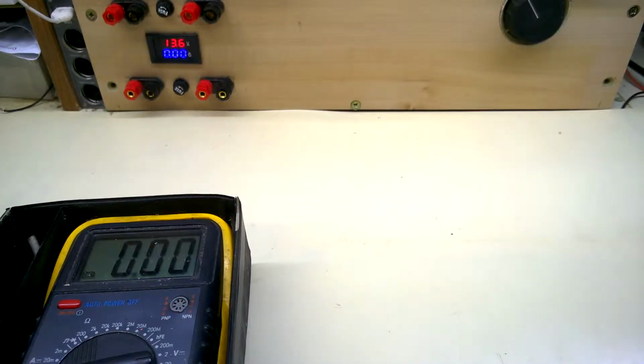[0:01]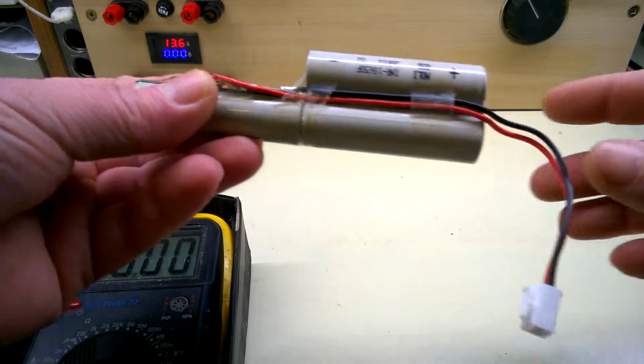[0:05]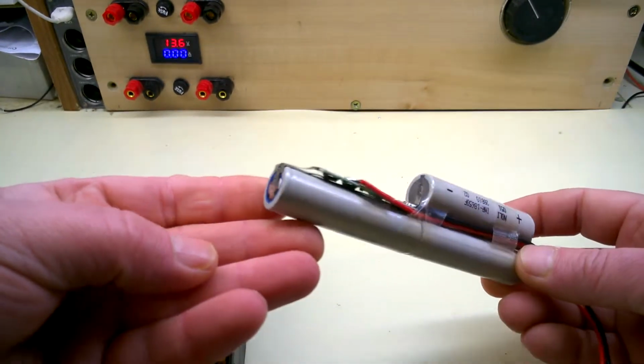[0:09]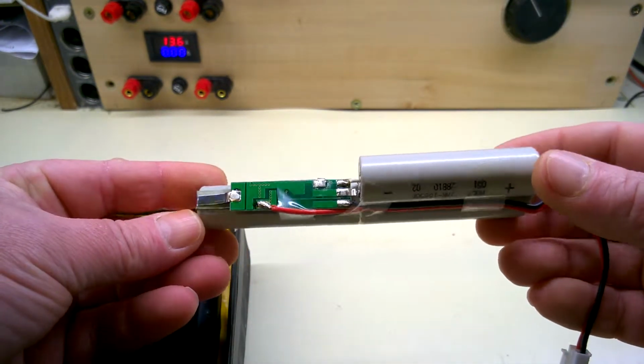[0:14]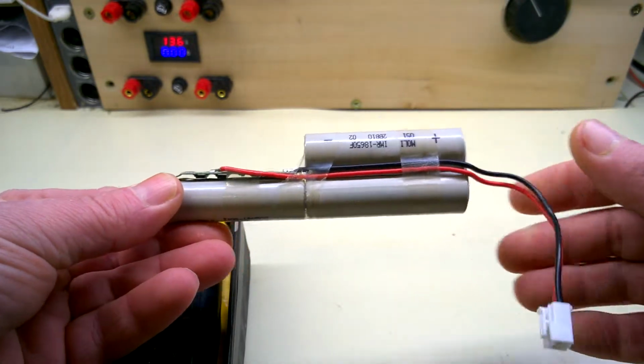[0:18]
Today I've got another bath lifter remote battery, I believe it is. I've been sent in to see if we can replace it. Apparently not available, as most of these things aren't anymore. It's just the whole remote available at about extortionate prices.
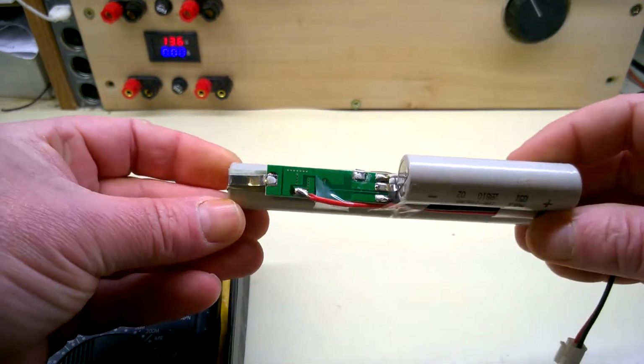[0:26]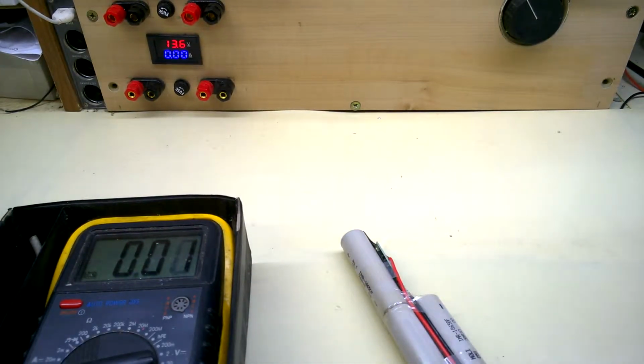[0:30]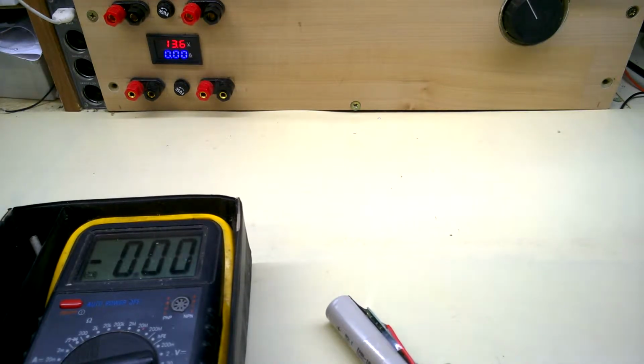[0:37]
So I've tested the voltage on this one. It comes up to about 11.5 volts. Try and measure that. What did you get? Oh, it's gone up to 12. Strange. 11.5 a couple of seconds ago. Okay, so it's still got some life in it, but apparently it's got issues.
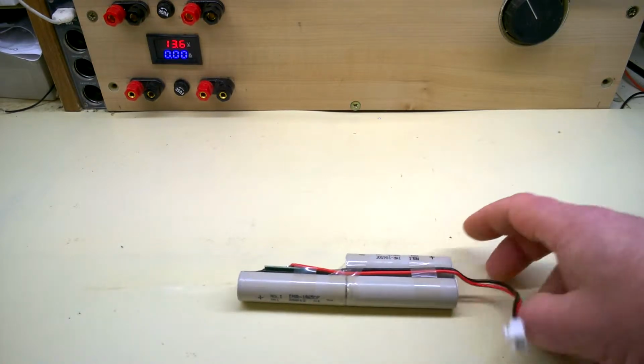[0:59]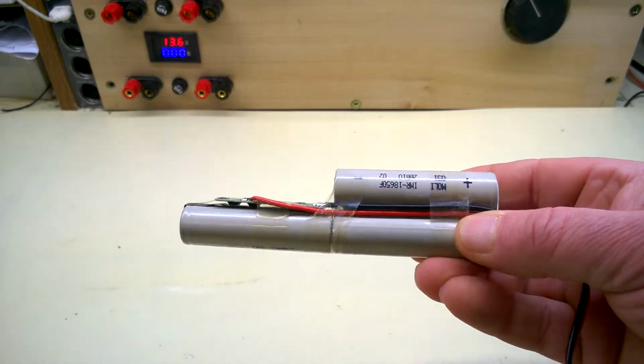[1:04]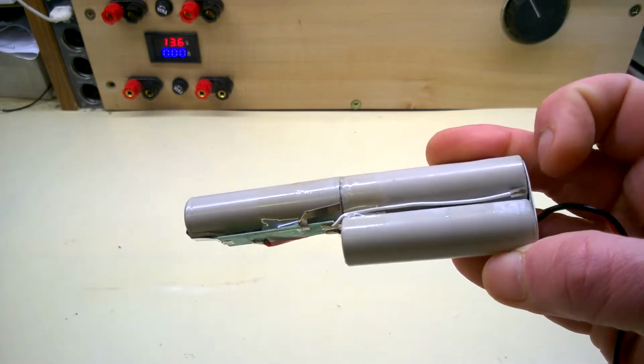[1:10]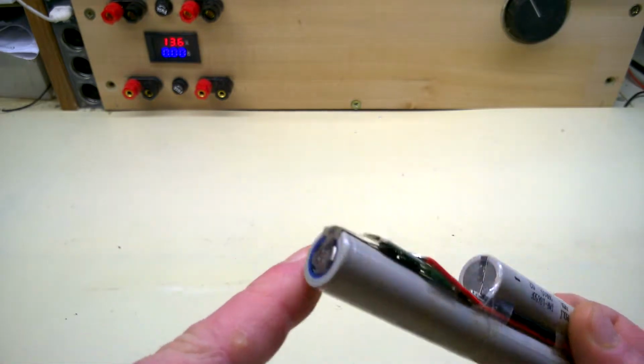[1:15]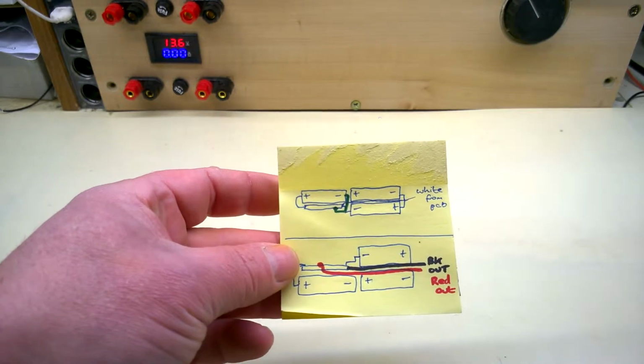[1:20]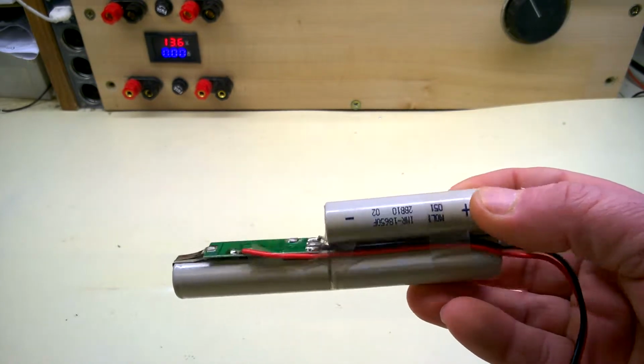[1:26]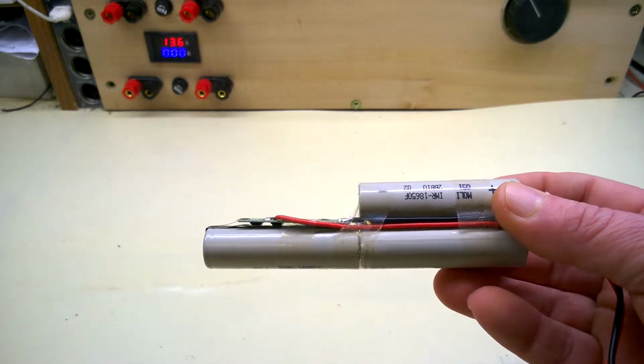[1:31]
I'll get that out of the way. I've already taken a couple of pictures of these, so I know how to put these things back together. A couple of black wires, connections going to every part, white wire to there. It's got a little strip going to there, connector on the end. So first order is make up a new pack.
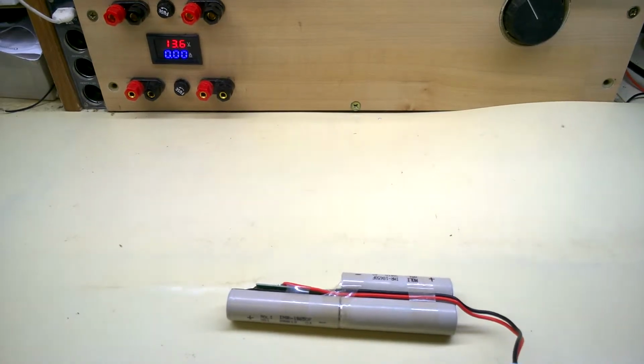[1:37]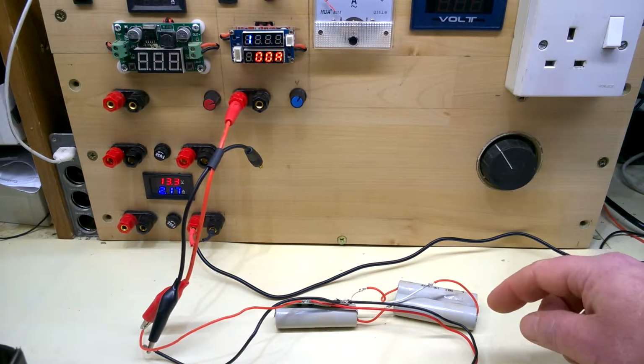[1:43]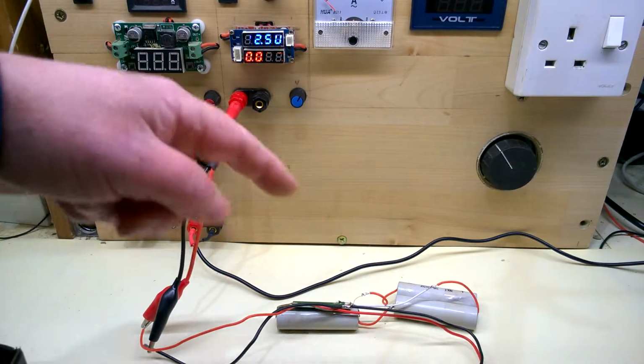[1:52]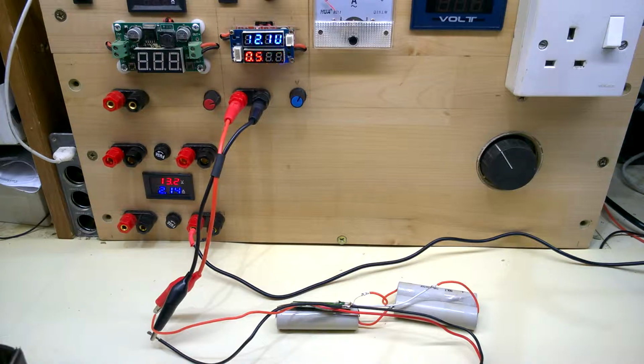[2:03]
Just a quick afterthought there, really. Having taken the thing apart, of course, I just wonder if that charging board was actually working on the original setup. So I've put it back together, jerry-rigged it with a few wires, and stuck it into a power supply, giving it 12.5, 12.6 volts, which is what you should have. It takes about half an amp there. I don't know what kind of power supply plugs in to recharge it, so I assume 12.6 volts for a 3 cell pack. And just check the voltages on these.
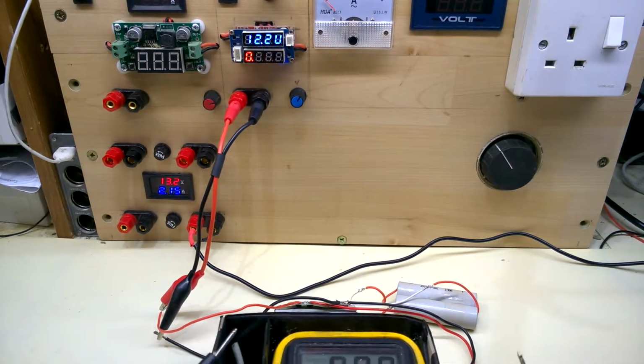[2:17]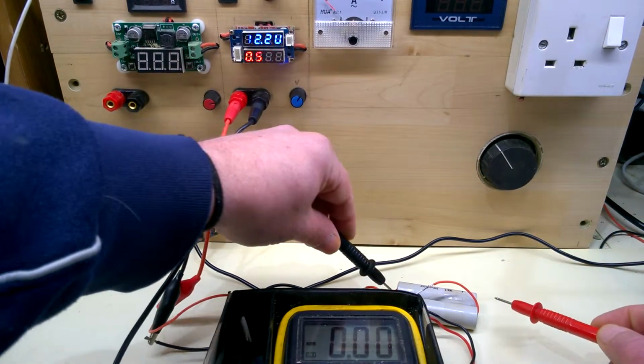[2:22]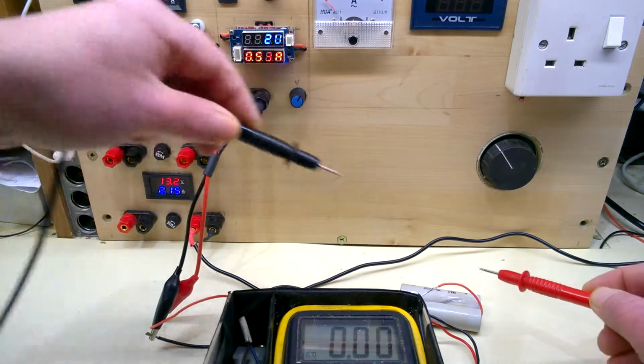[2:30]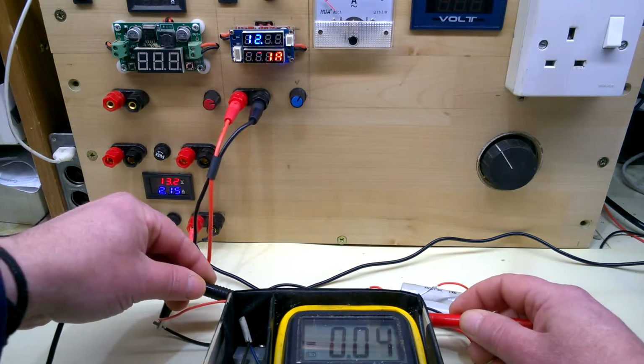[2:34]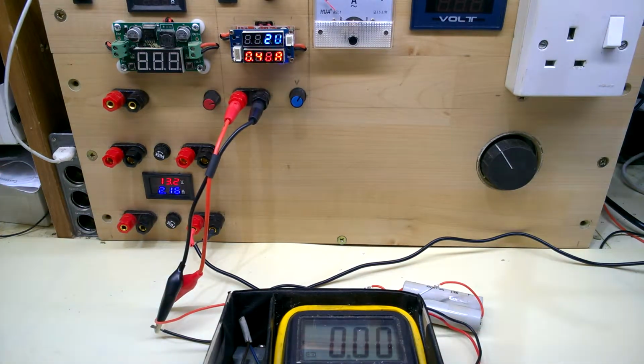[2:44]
Can I get that in there? Just about. Check that one. 4.02 now. 4.13. So the last time I did this, I checked it, it was on about 4.3 volts per cell, so it was a little bit high. I'm just going to leave that for a couple of minutes and see what happens. So I know at least the charging board is now working, but I'm just hoping it's not going to give that 4.3 volts per cell, which is not good.
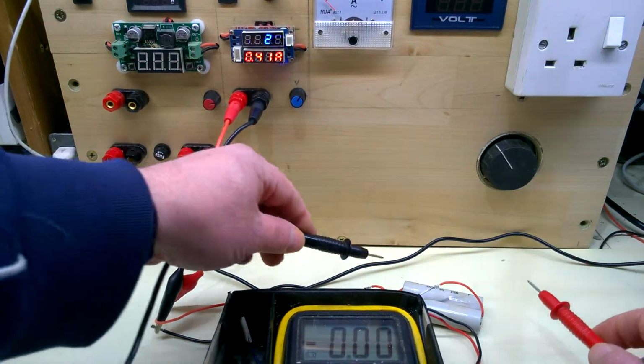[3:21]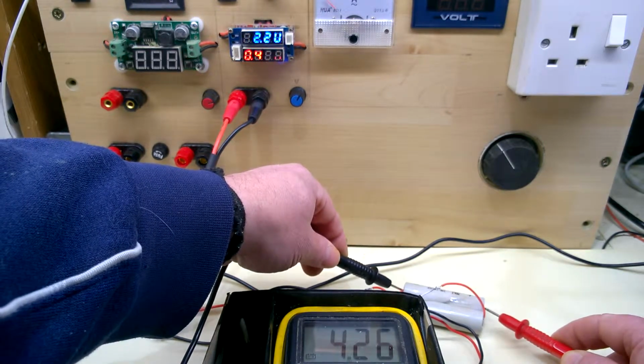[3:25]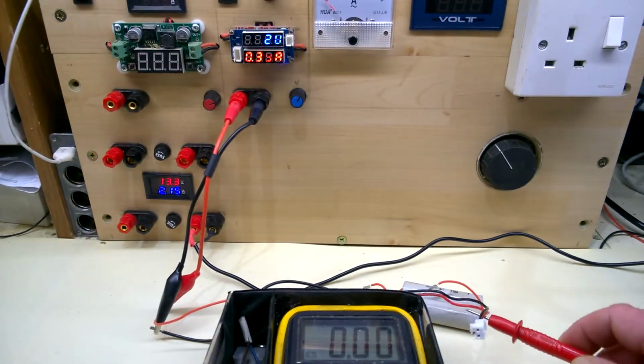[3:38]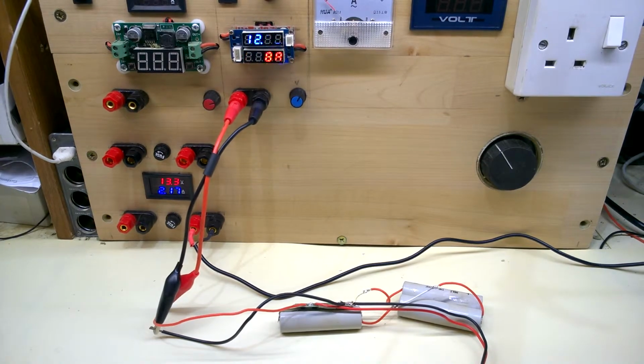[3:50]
I don't know if you can see this through the camera, this is all flashing all over the place. I see with my eyes about 12.2 volts, 0.4 amp. So, board's working, but it was giving it slightly too much. I see 4.26, that's going up. That's too much really for a lithium cell. But as I say, I don't know what goes in there. Maybe just a 12 volt supply, I don't know. But it is what it is. We'll just replace that. Let's make a new pack out of that.
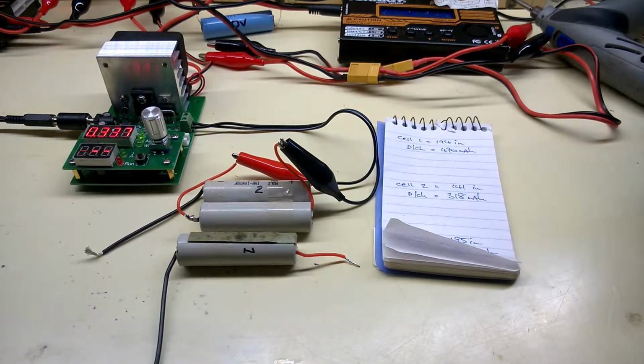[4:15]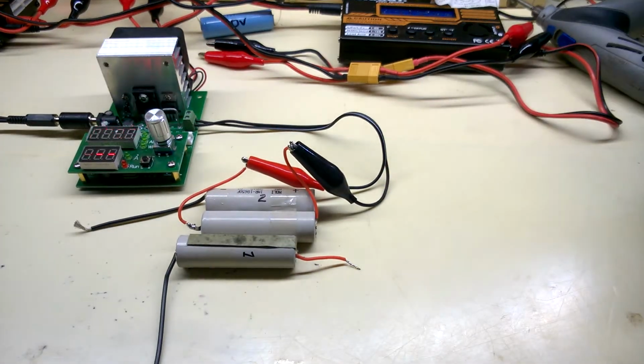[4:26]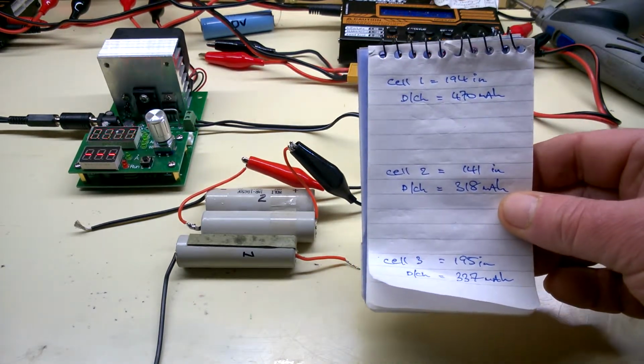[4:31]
Just another quick thought, really. Before I wire this back together, check the charging board. I was going to charge these cells up individually, see what sort of capacity, if any, they'd be giving me. So that's why I slung that back together. This is just for curiosity's sake. I charged and discharged these. A handy little test if you don't have one. About 12 quid, go and buy one.
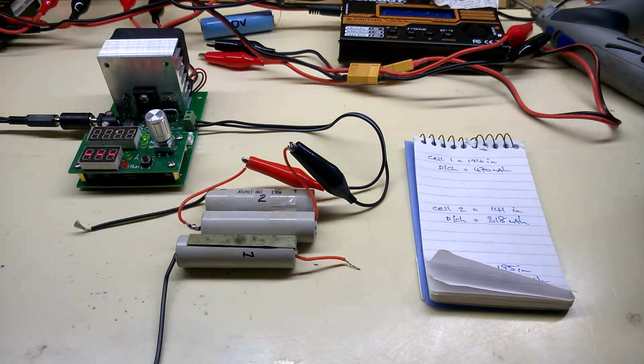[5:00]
It's a curiosity. I can't see that very well, it's a bit blurry. Hold on, I have to look over the camera. Cell 1, 470. Cell 2, 318. Cell 3, 337. It's discharging 1 amp. I was going to discharge them at lower, but it would be crap anyway, just for curiosity to see what they do. So an average of 360, 380 milliamp hours. No good. You'd expect about 2 amp hour, something like that, 2000 milliamp hours. So that's that. So next will be to make a new pack.
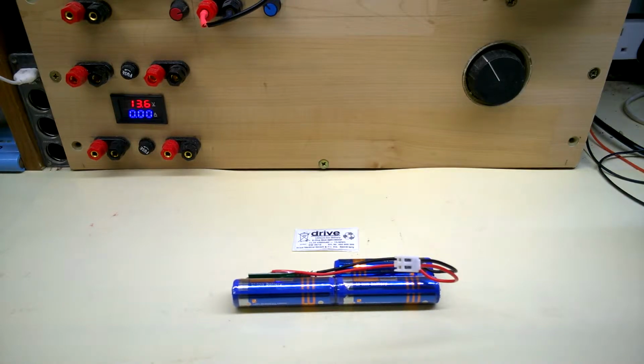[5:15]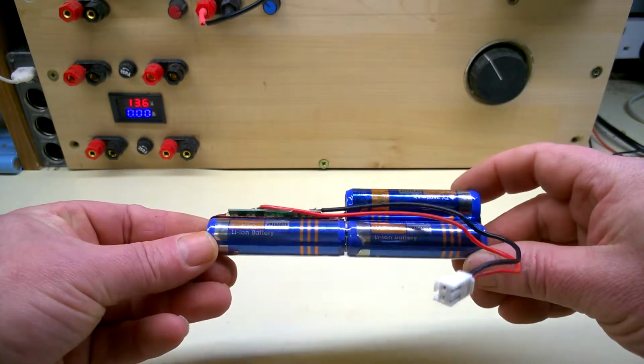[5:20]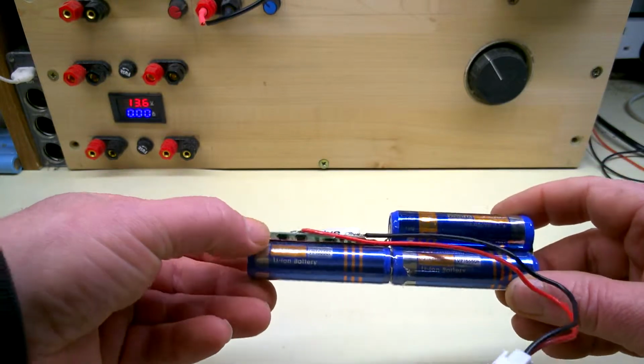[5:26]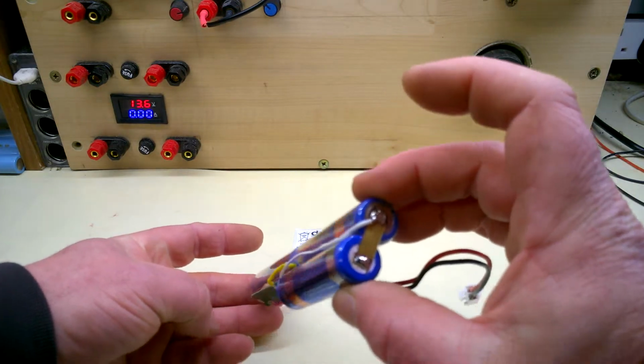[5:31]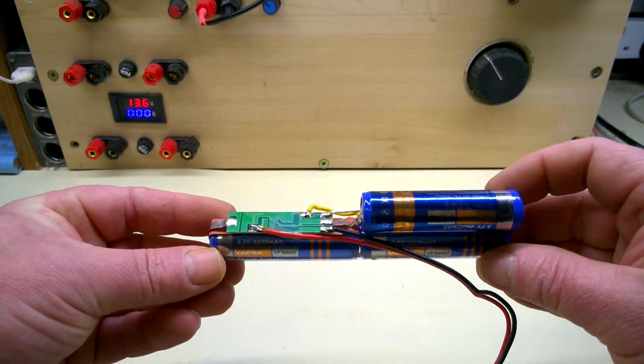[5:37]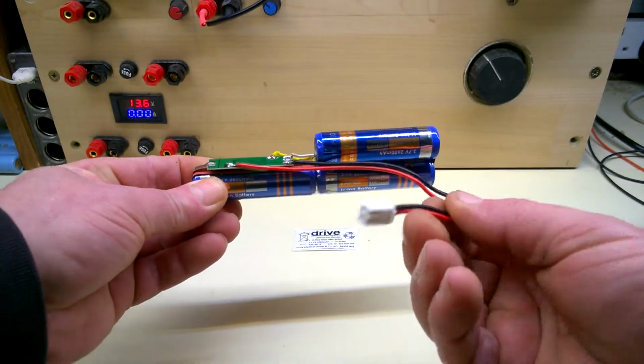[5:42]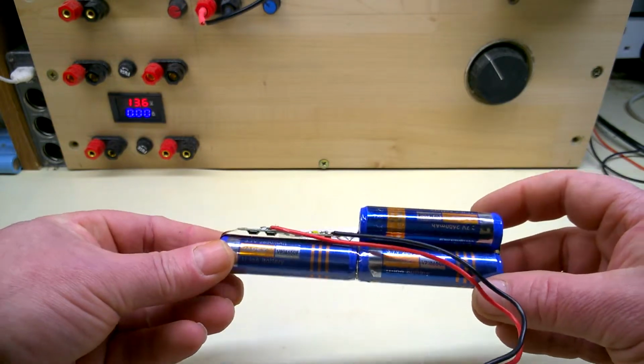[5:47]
So this is the new pack, made up from new 18650s, capacity of 2600. So put the board back on, bit of paper underneath there to insulate it. Put the wires back on. Okay, so all I need now is to apply some power across here. I don't have the correct connector for this. Apply power to the board, make sure it's charging. Then put a bit of shrink wrap on and finish putting it back together.
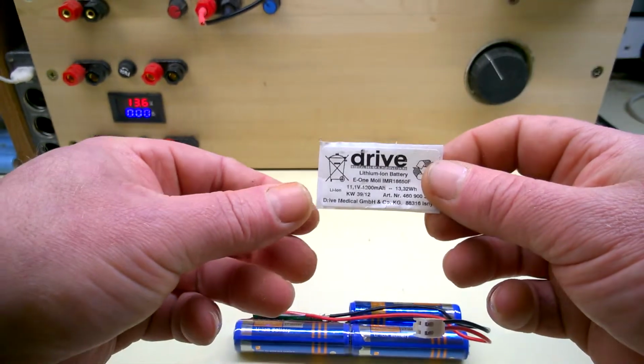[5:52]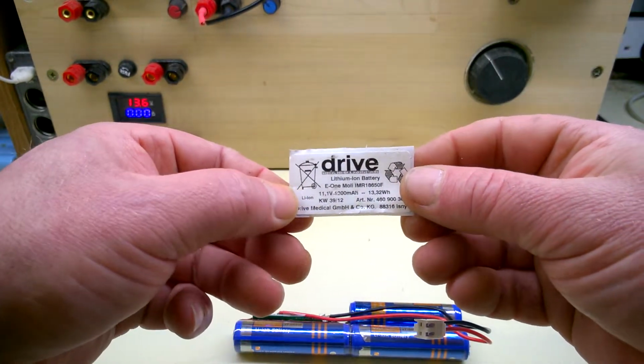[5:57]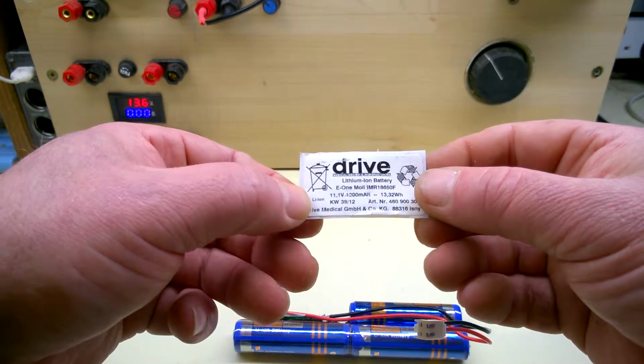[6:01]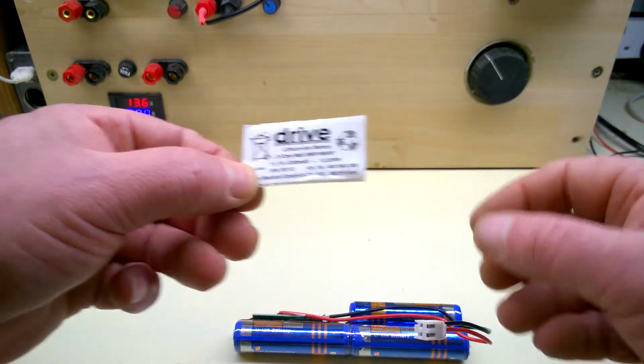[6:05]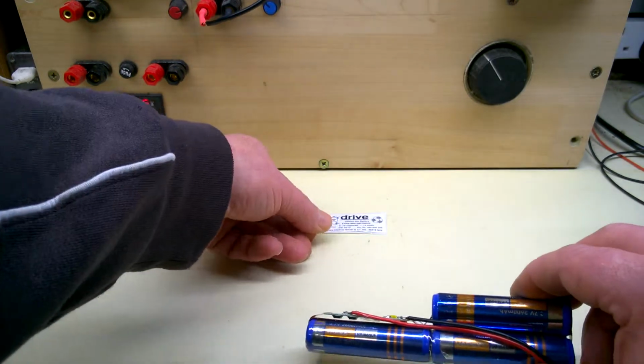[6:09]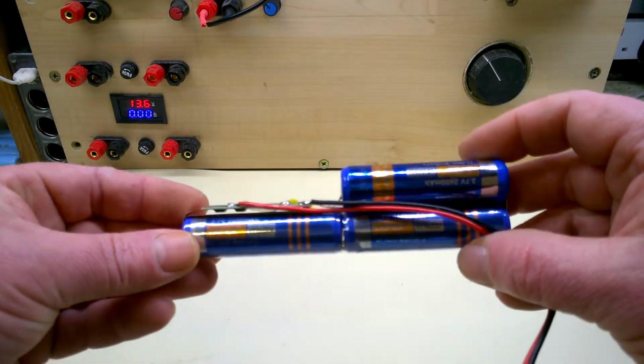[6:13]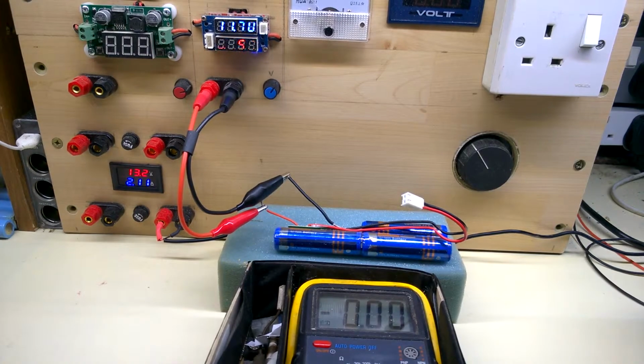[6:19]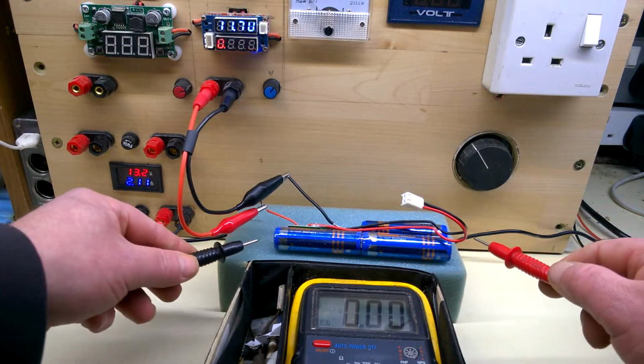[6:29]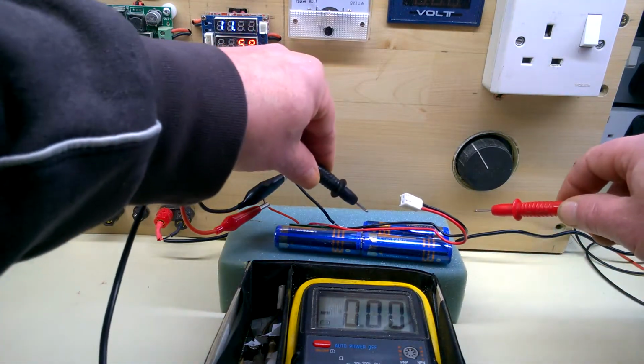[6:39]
For those who are interested, this is a Drive Medical lithium ion battery, 18650, 11.1 volts at 1200 mAh. So that's twice the capacity of the old one. The old ones only come up to something like 400. If we scroll back to the beginning of the video, I forgot what the actual numbers were. Okay, so attach some wires and supply some power to it, going up to 12 volts. I set it on 12 volts, half an amp. These cells were on 7.5 before they were charged. That's 8.2 now, 4.1 each.
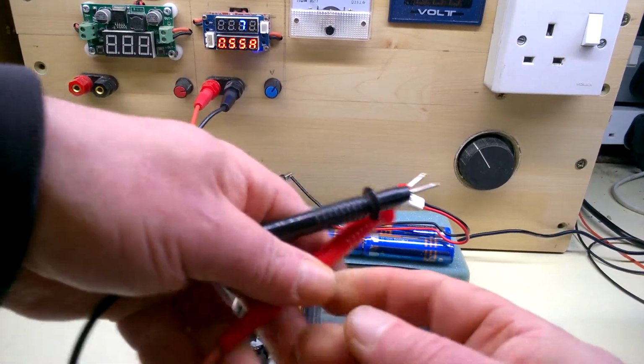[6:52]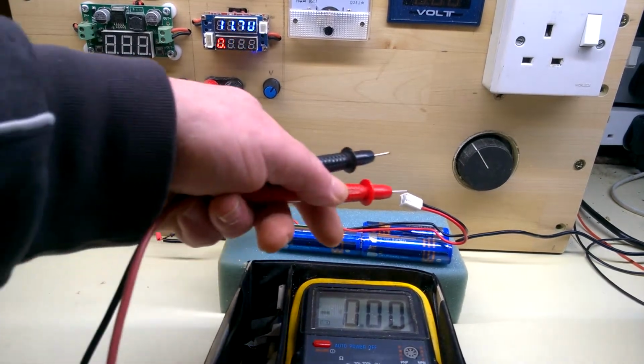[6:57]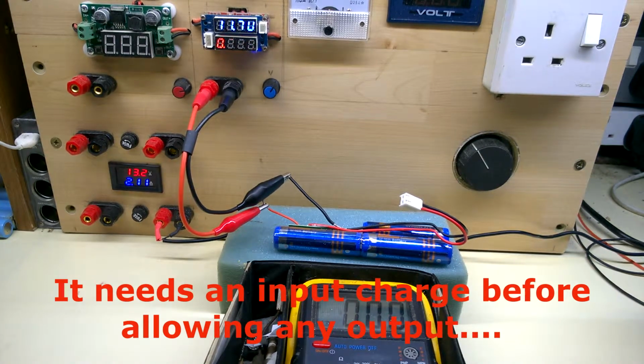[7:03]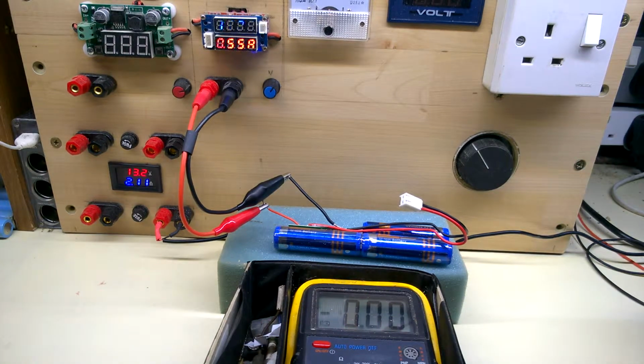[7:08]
And that one, give me a reading here. What was that? Yeah, 4.1. So it's accepting power in. I tested the output on this and there was nothing there. So I know this has got circuitry underneath there. I'm hoping it's nothing like lithium ion drill batteries, where you take the batteries out and it refuses to cooperate ever again. But we'll see how it works. I'm going to leave that on charge for a couple of minutes or so.
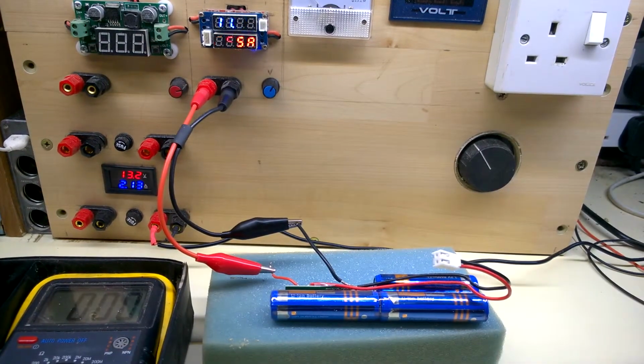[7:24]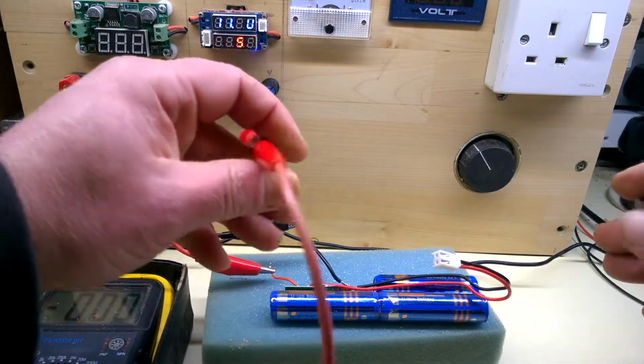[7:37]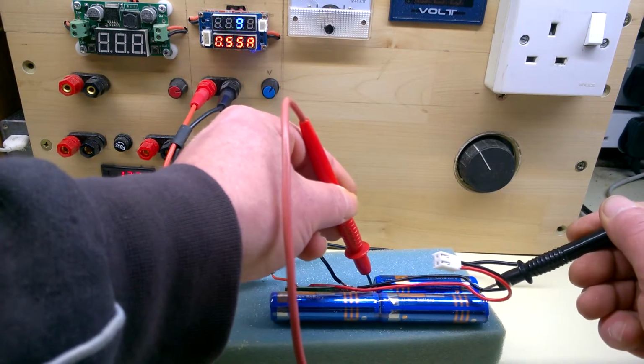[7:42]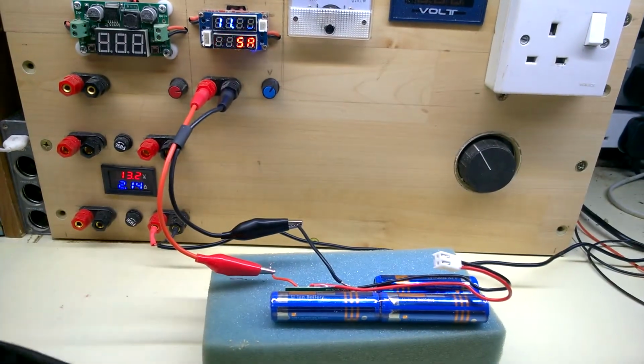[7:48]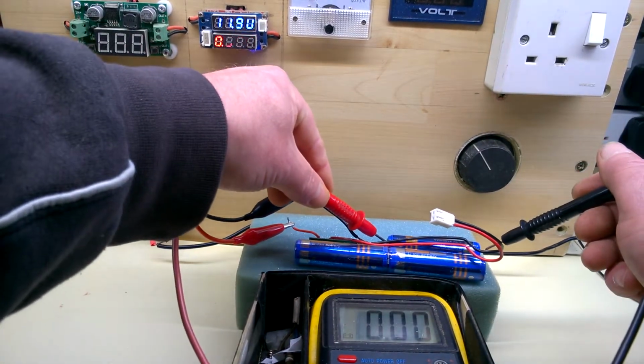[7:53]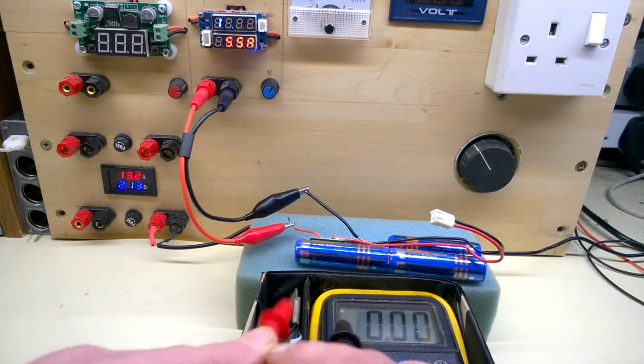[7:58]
Back to it then. Okay, so that's hooked up to the power supply. You see the meter in there, seeing what we've got. Showing 8.4 across that one. It's only 12 volt going in. So I don't know what the power supply to this is for charging. You can see that that says 4.2. Let's put that in there. That might be easier to see. I know I've got these connected in reverse, but 4.2. Okay, so we know it charges.
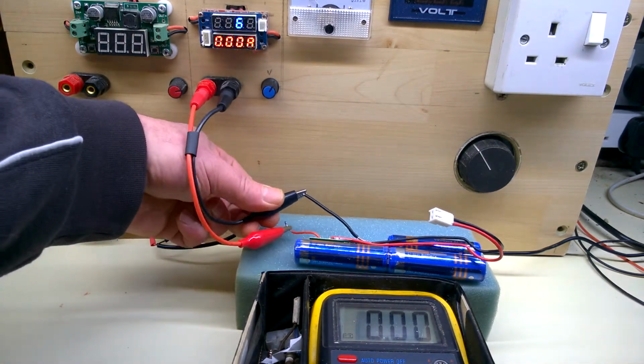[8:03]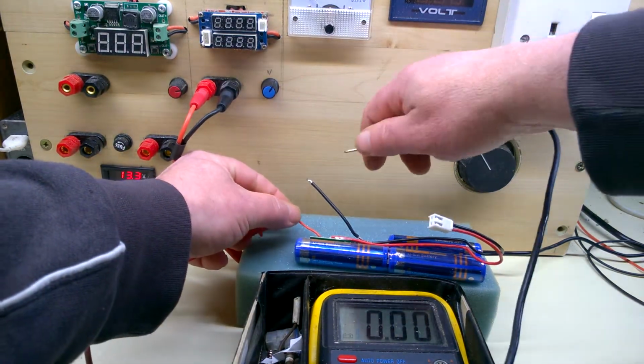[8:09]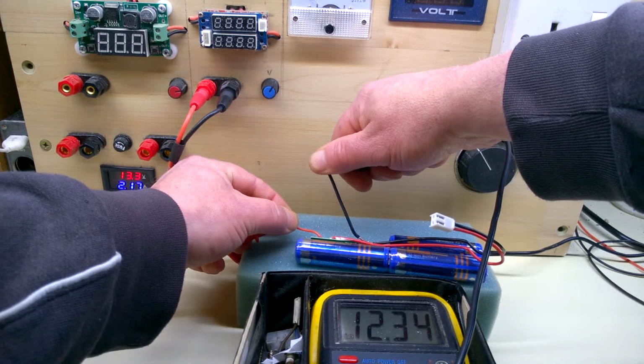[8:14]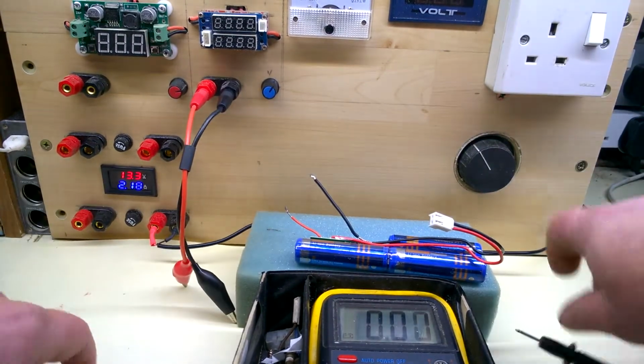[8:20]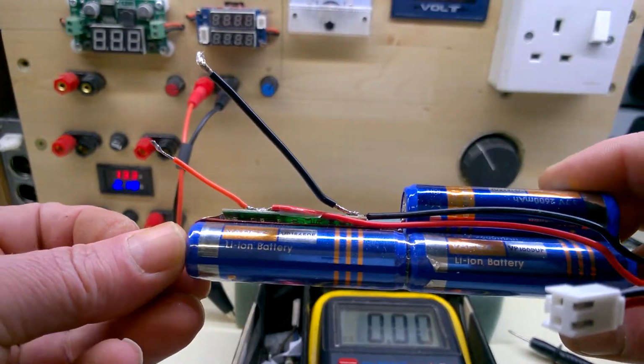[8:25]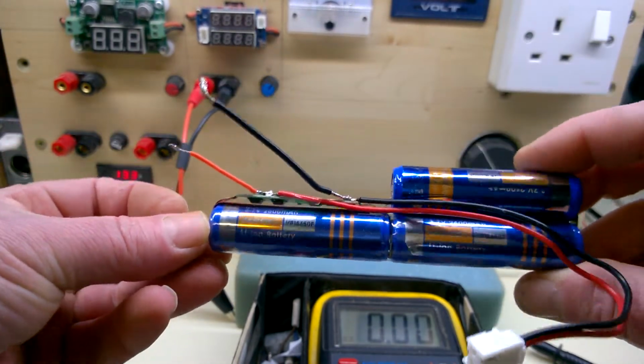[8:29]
Let's switch that off and see if we've got any output on these. If there's no output, then I can't use this board. Ah, here we go. 12.34. Oh, great. I wasn't getting anything earlier on before charging. As I say, there's some smart circuitry in there. It's underneath that board. I don't know if you can see it. A few chips in there. Okay, well, there's nothing more I can do with that.
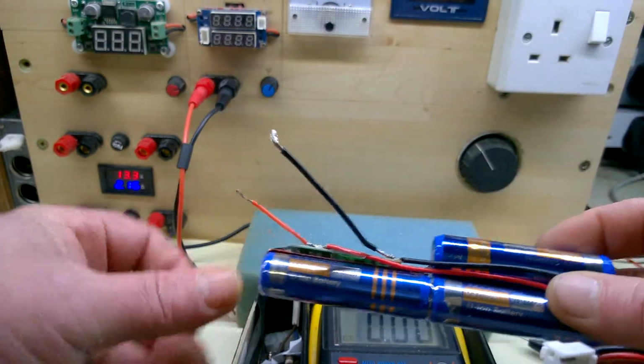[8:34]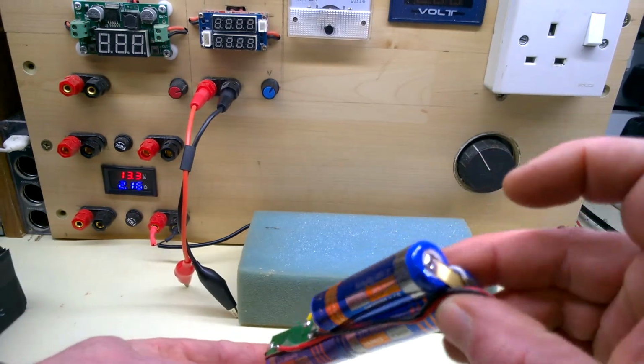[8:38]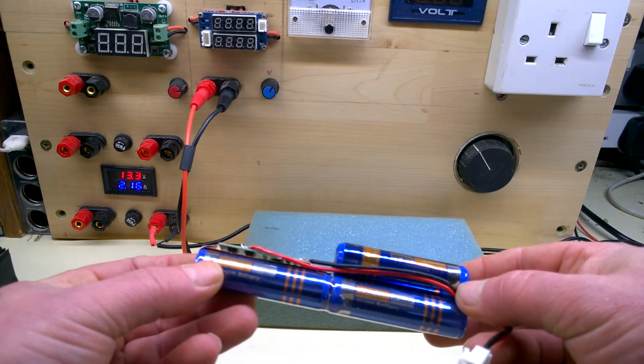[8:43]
I'm happy with that. Put a bit of heat shrink on there, put a bit of tape on it, put some caps on the ends. You send that back to the customer and hope for the best.